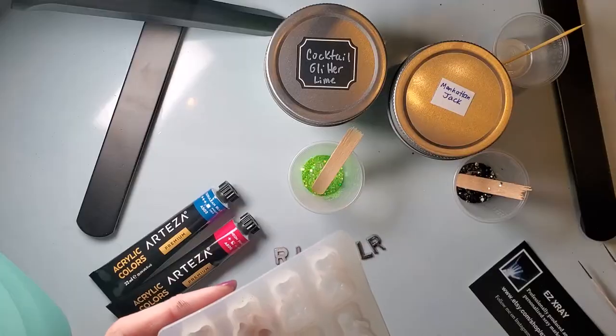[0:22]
I am going to be doing another tutorial on some little x-ray markers. They are out of a mold. I used UV resin and some acrylic paint. So I'm gonna come show y'all how I made these. They're super cute. So let me get everything adjusted and I will be right back.
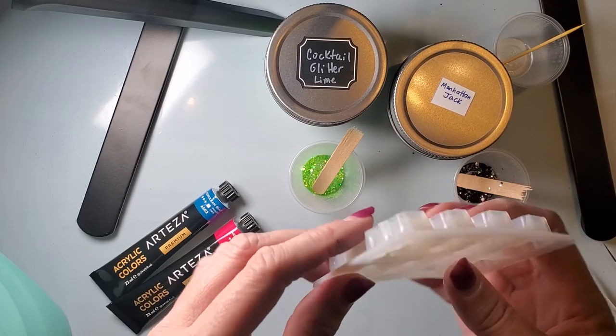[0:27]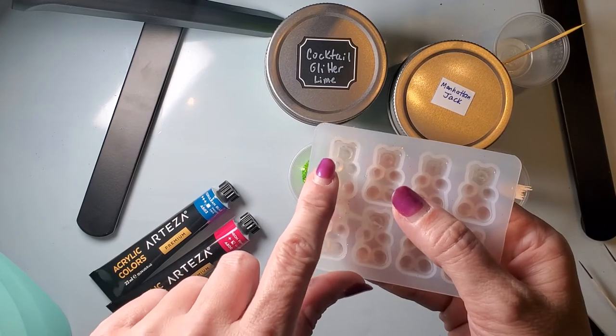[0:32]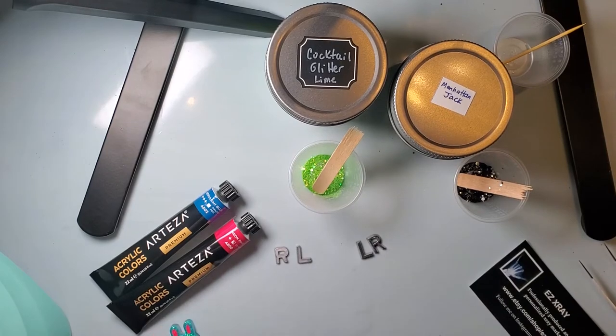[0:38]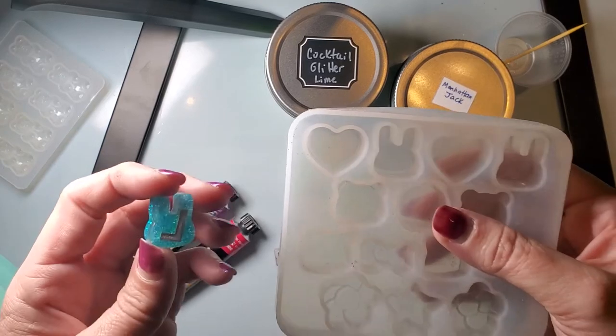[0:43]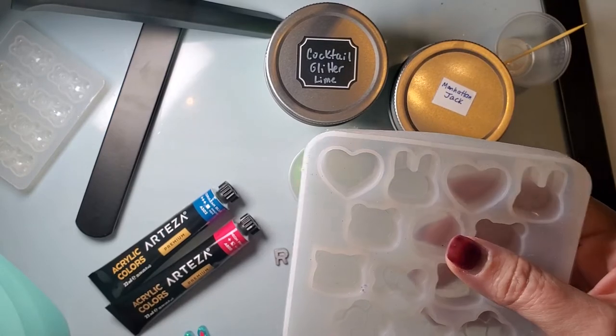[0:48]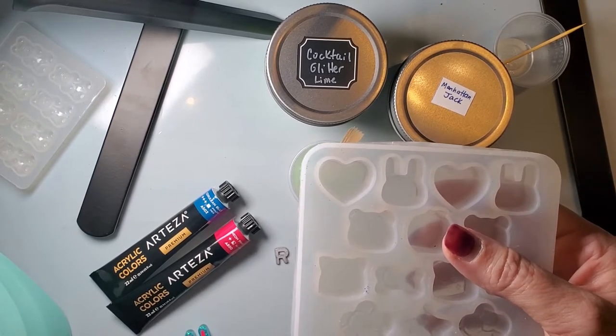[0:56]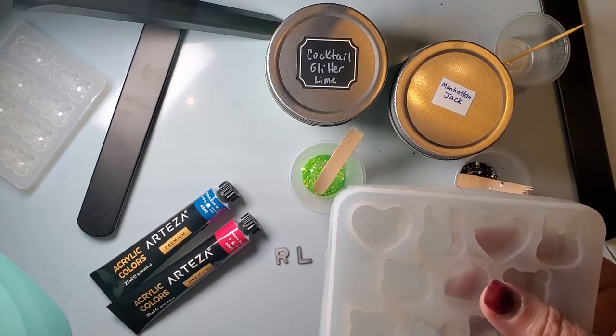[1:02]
So if you've seen my earlier video with the gummy bear molds, the details kind of come up high, so you have to fill the whole mold to get the whole design of the gummy bear. Whereas these are also really thick, but I don't fill it up all the way. So they're not as thick, but you can make it as thin or thick as you like, to your preference. But for x-ray markers, I don't want mine super thick because some people do want them to fit into the bucky. And if you do them really thick, they're definitely not going to fit into a bucky because all buckies are a little bit different.
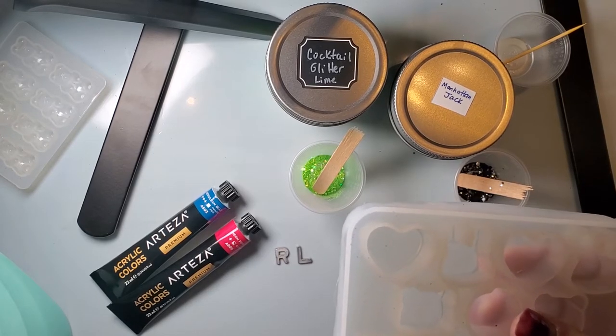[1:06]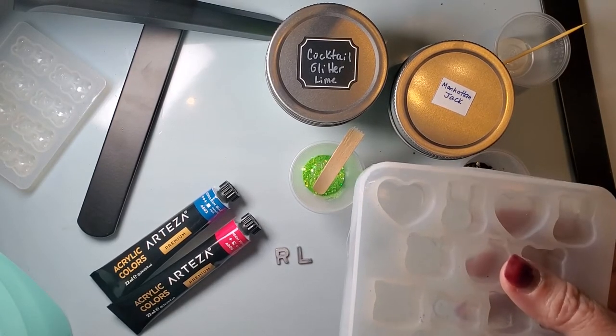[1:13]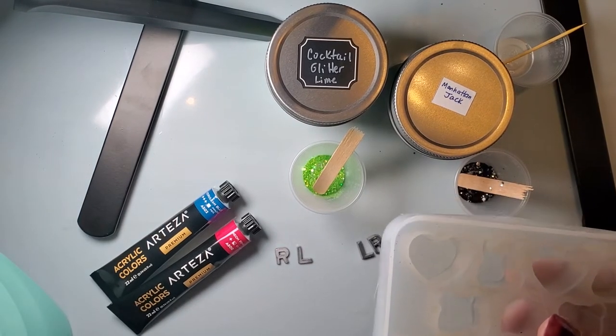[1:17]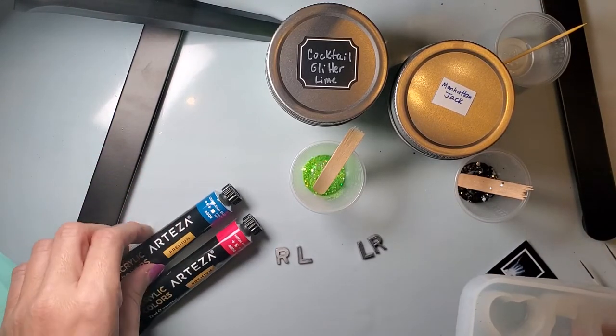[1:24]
And that's what you use to put the cassette in. It's a wall mounted grid or a grid on a table. It's the little tray that comes in and out of an x-ray table or on the wall bucky. And it just makes for a cleaner picture. So some people like to put their markers right on the cassette because it's not as much magnification. So that's kind of why some people like it.
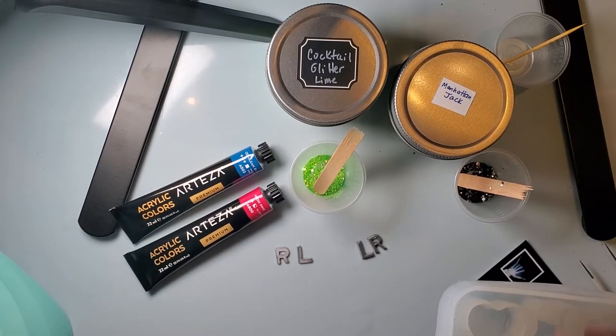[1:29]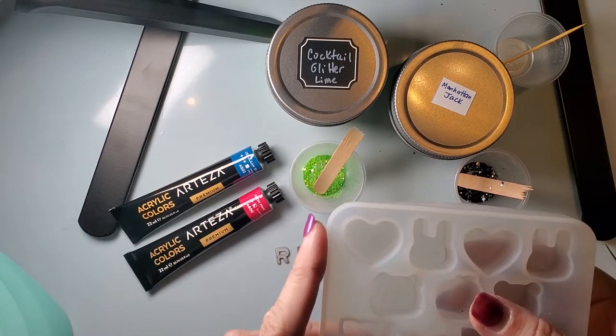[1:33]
I don't have a problem using mine tabletop or taping it to the front of the bucky, but some people might not like it. So I would suggest letting people know how thick they are.
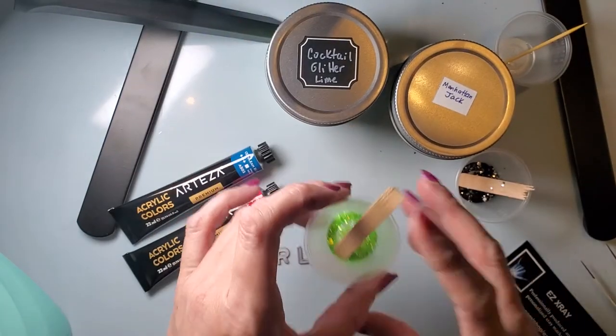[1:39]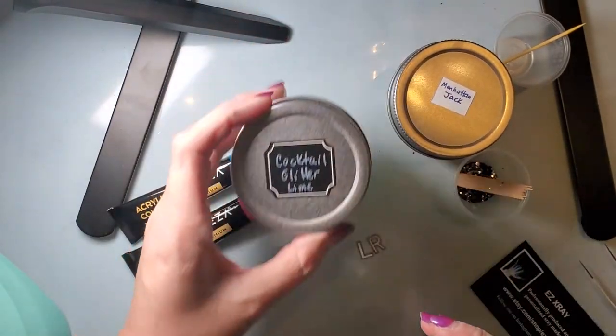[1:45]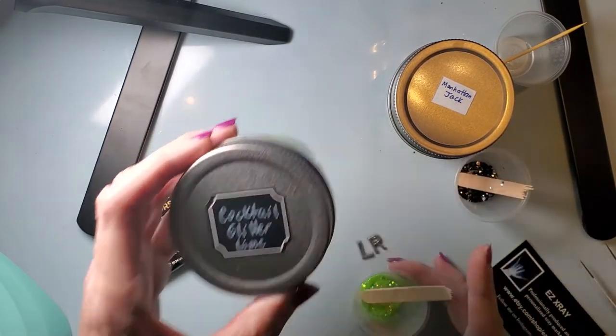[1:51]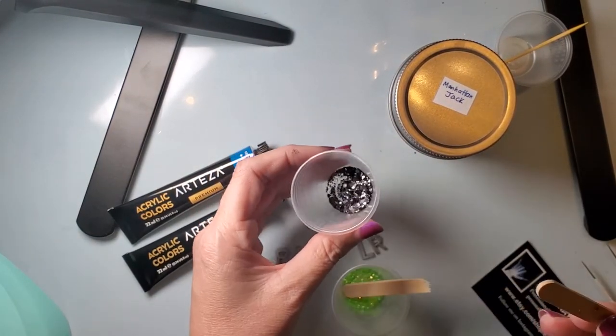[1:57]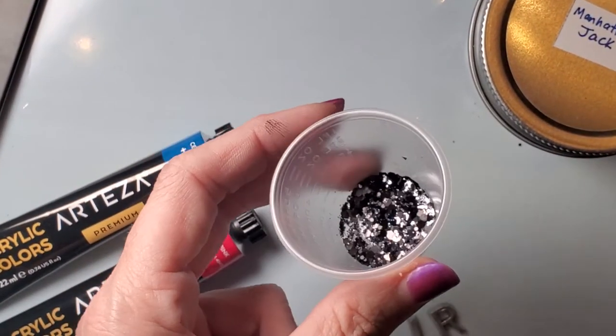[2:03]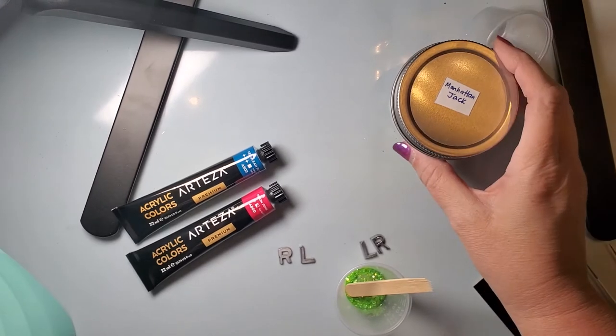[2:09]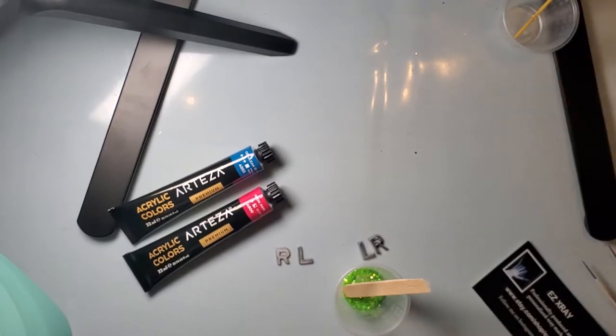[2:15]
But so my friend picked out a lime green glitter. It is cocktail glitter lime. This one is from Nola Craft Culture, which like I said, is one of my go-tos. And then the other one is a black and it's got like a foil in it. I don't know if you can really see that very well. Let's see if I can zoom in a little bit better. So it does have some foil in it. And let me zoom back out. That one is Manhattan Jack, and that one is from Mr. Nola's. So that's kind of my two go-to places when I get my glitter.
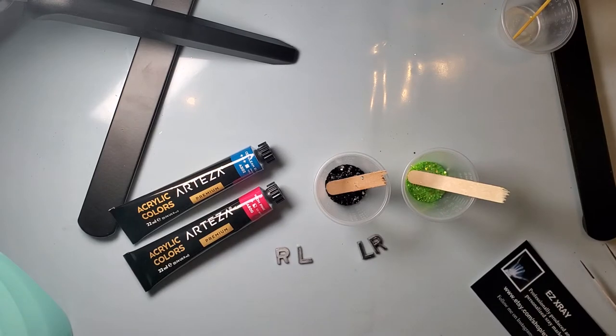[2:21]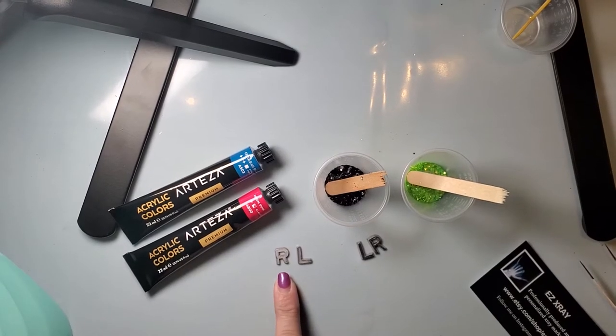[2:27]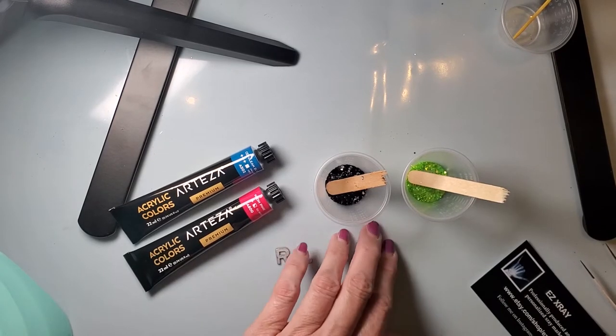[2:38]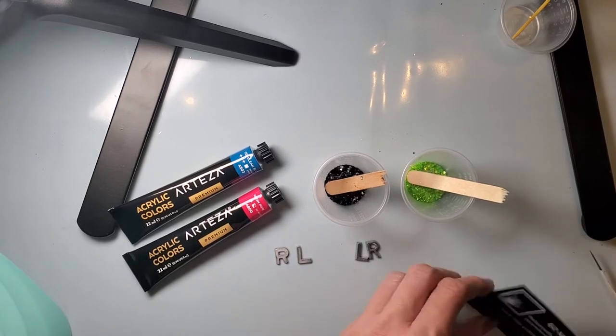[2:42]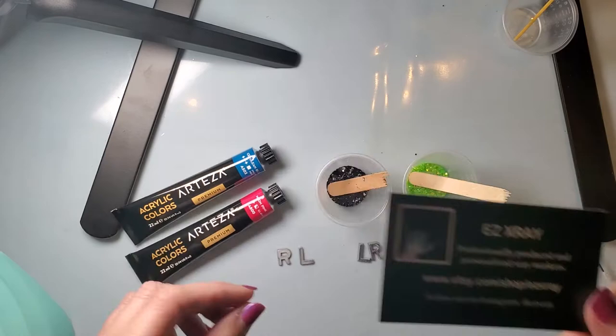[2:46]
So lead letters. I had always been using Universal Medical for my lead letters. I went the other day and I did see that their prices had gone up. So I did a little bit more of a search and I did find another company. It's actually Easy X-Ray. I'm gonna show you the card. Easy X-Ray, it's off of Etsy.
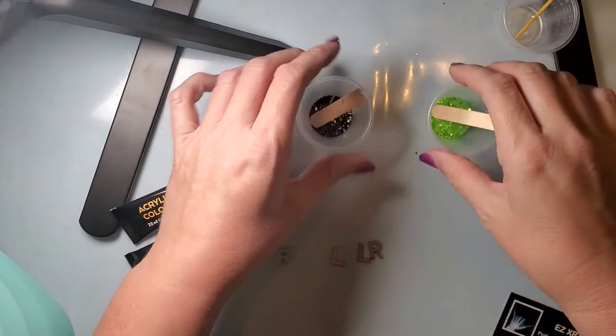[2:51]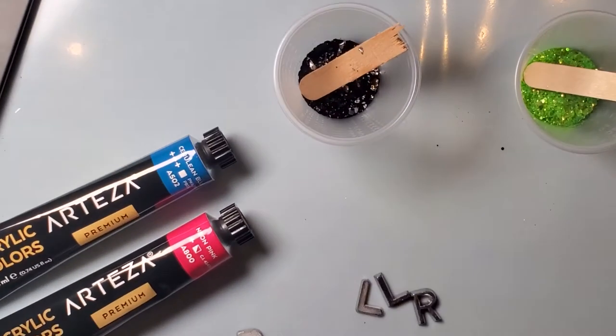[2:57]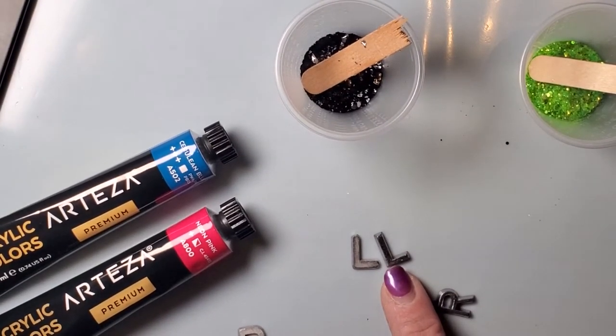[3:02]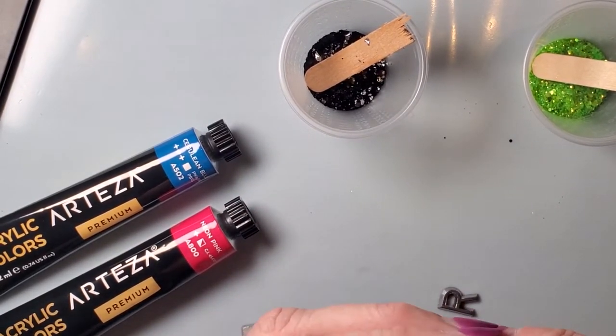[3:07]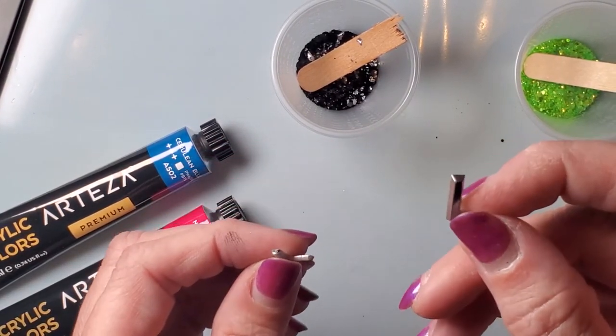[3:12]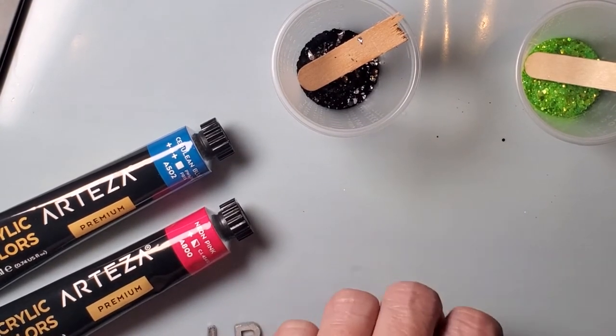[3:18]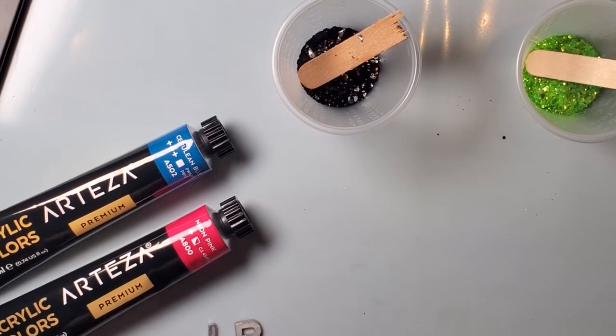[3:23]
The letters are just a tad bit different. Let's see if I can zoom back in, guys. Oops, wrong way, sorry. So the letters do look just a little bit different, and there's also a little bit of difference in the thickness of them. The ones from Easy X-Ray are a little bit thicker, but they're still going to work. I'm going to go ahead and use my ones from Universal Medical just because I'm going to use up what I have left. So I will go ahead and use these.
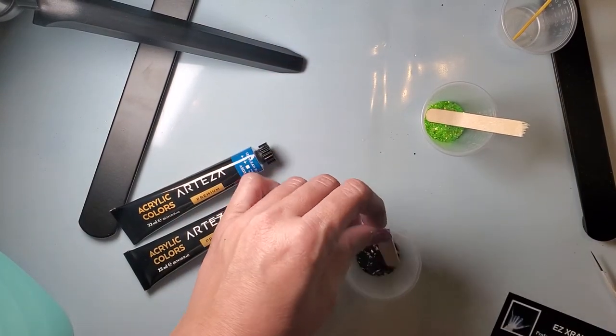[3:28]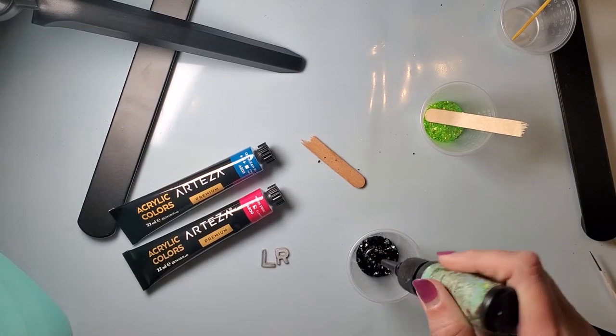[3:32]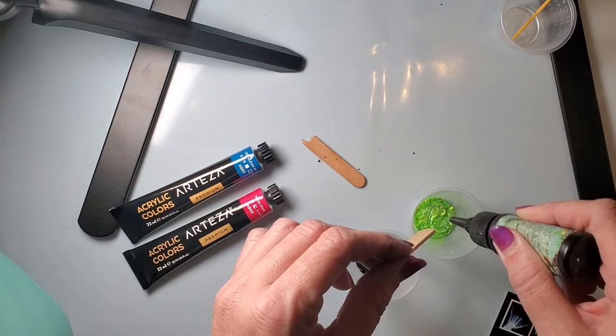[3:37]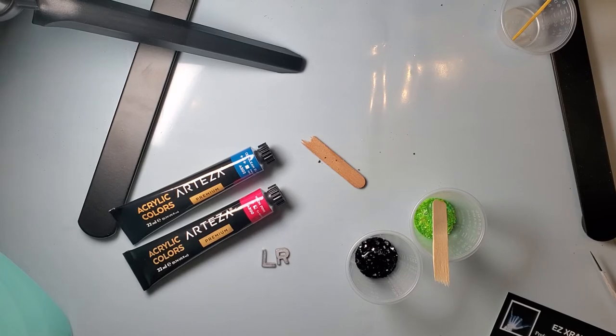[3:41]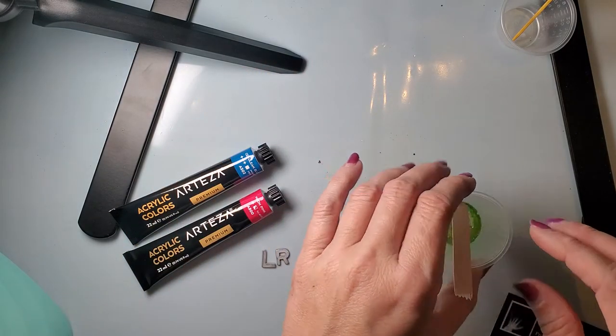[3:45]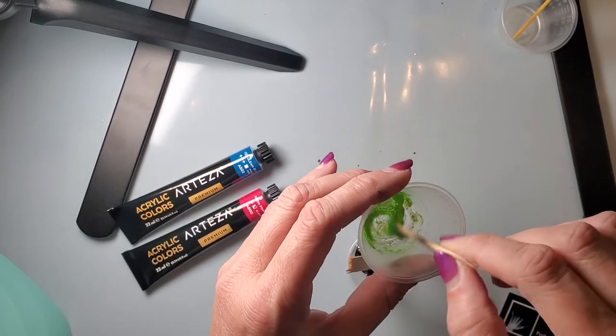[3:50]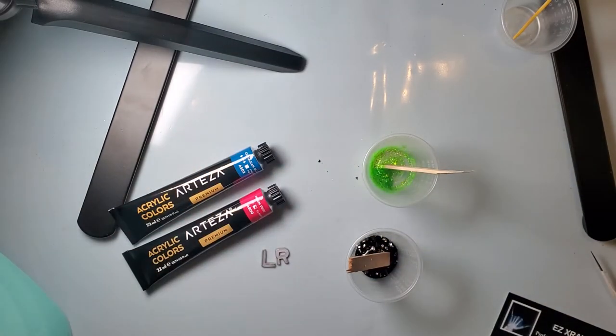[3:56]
So I will go ahead and add my resin to each little cup. Sorry guys, I still don't have a really great setup yet because I'm still waiting for them to do my floors in my craft room. So I'm gonna mix it up. I'm gonna add a little bit more to this one. This one's not quite as thin as I like it. Give me just a sec, let me readjust something here.
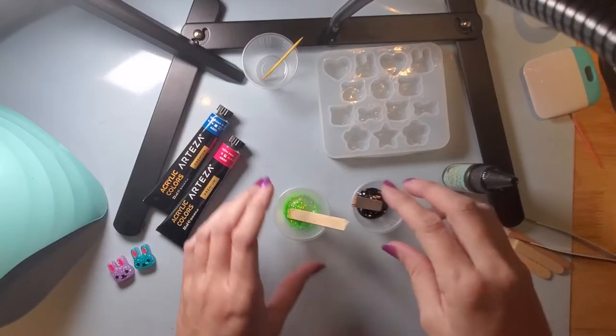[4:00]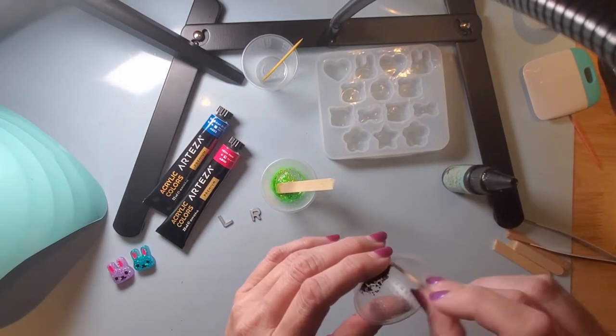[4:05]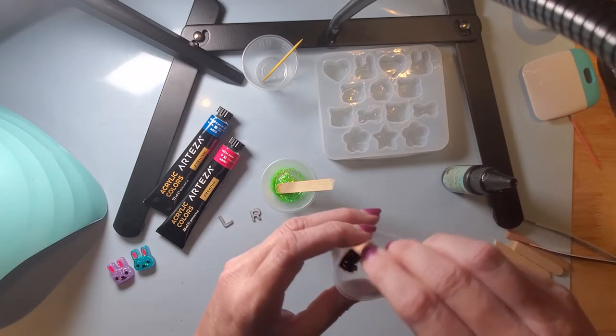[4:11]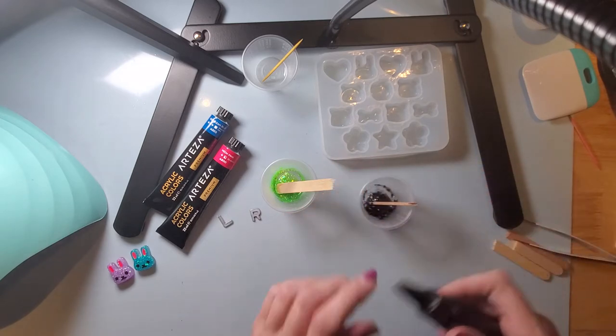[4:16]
All right, so like I was saying, I'm gonna mix them up and make sure they're the consistency that I want. Because the green, I know that I have to add a little bit more UV resin to it. My black just a little bit more also.
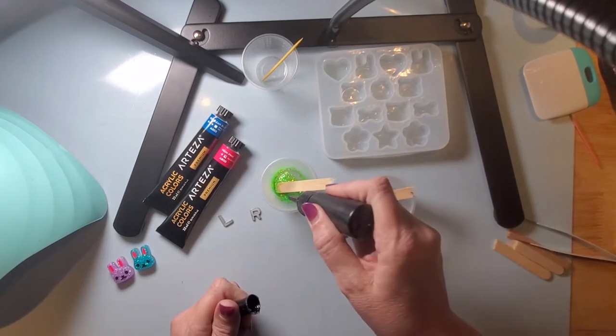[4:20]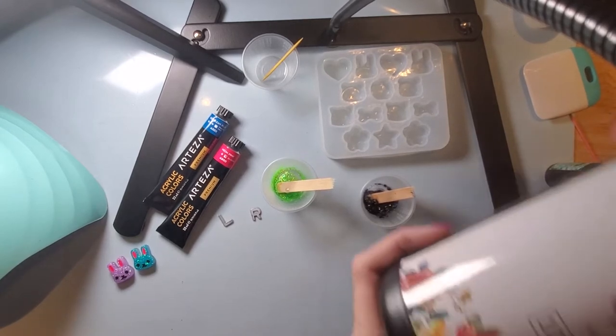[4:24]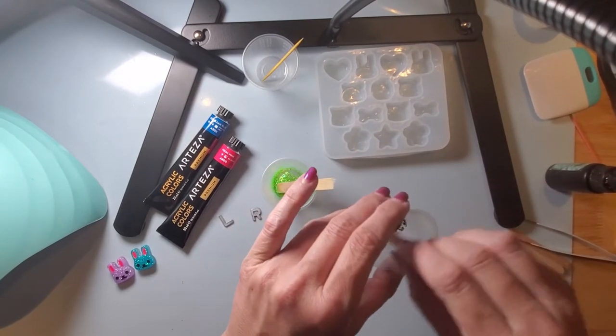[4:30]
I get my resin, it's a Lumino brand. I do get mine off of Amazon, and I get the 1000 gram. I like it, I haven't had any problems with it. But to each their own.
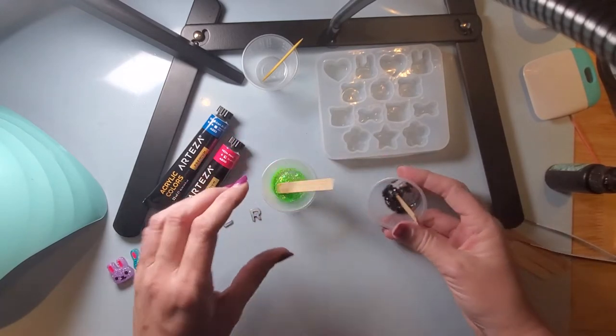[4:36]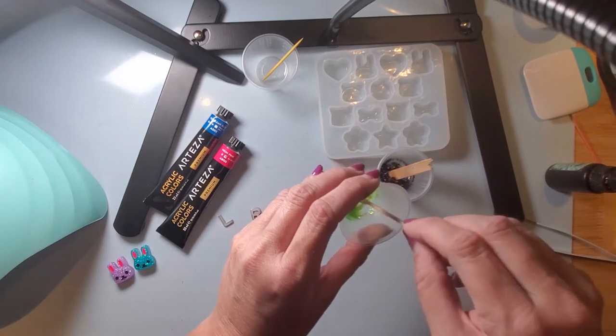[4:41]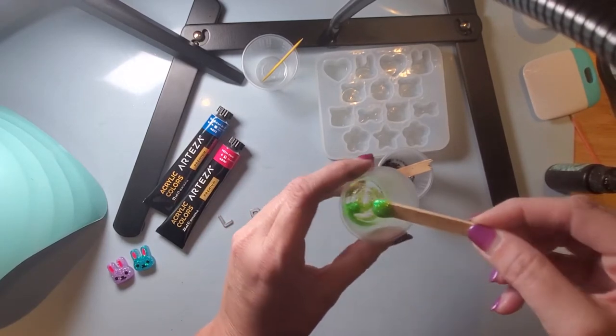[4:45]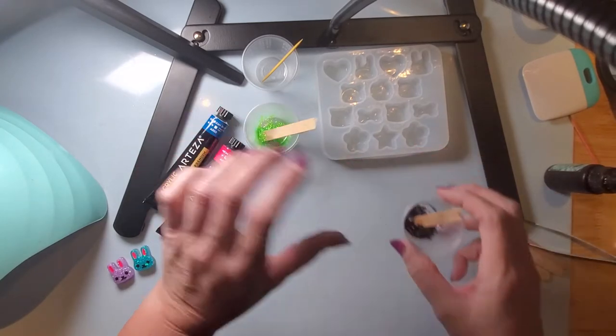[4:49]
All right, so I don't like my glitter and resin mix super thick. I like it to run just a little bit to where it kind of drips off. So, all right, I am going to do the bunny.
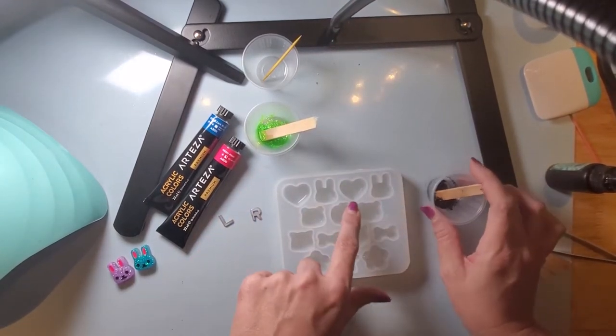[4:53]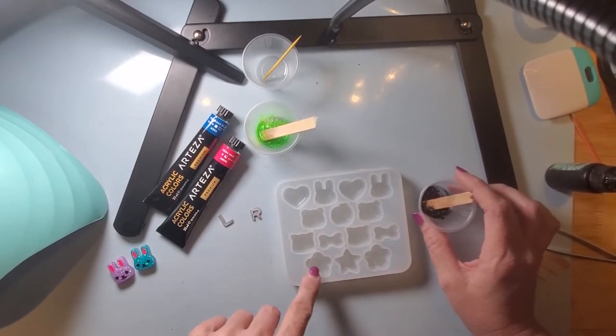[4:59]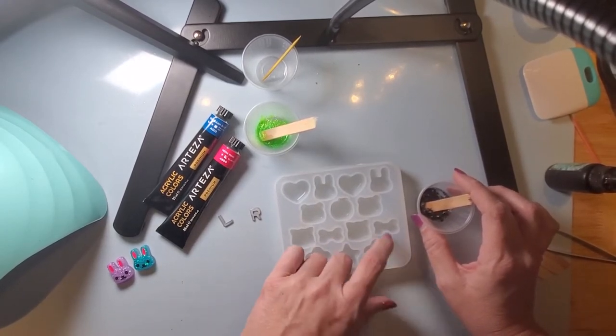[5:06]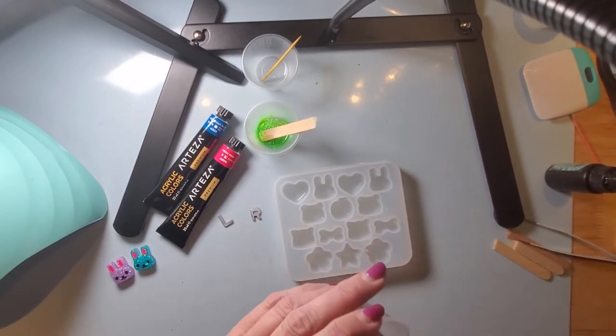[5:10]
So there's bunnies, hearts, little kitty cats. I think that's kitty cats. I don't know if it's supposed to be cats or little bears. Actually, that's the bear. This is the kitty cat. Flower, stars, bows. The bows you can't fit a right into, but if you so desired, you could do a left. So I'm gonna do black and lime.
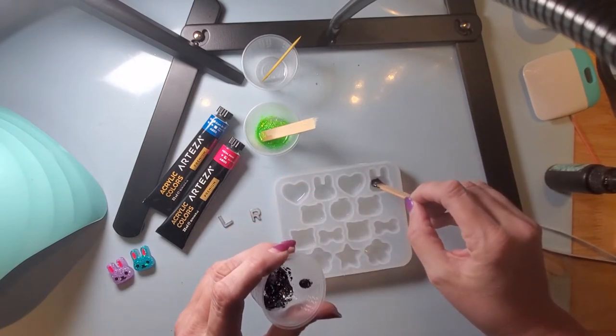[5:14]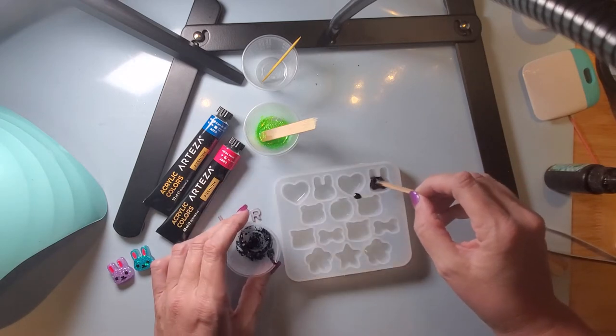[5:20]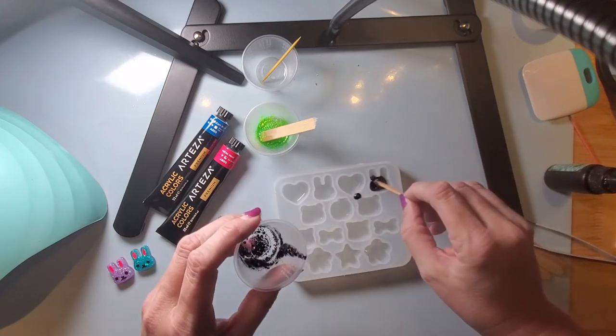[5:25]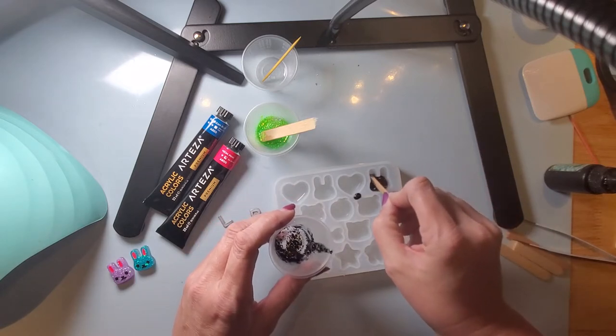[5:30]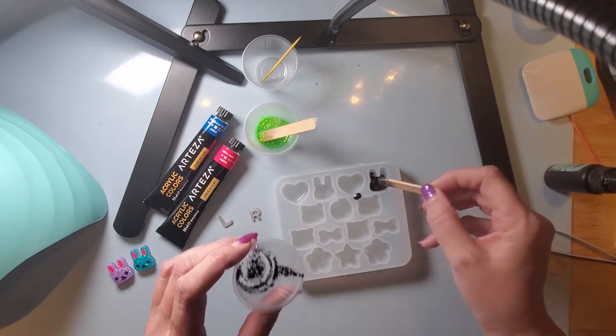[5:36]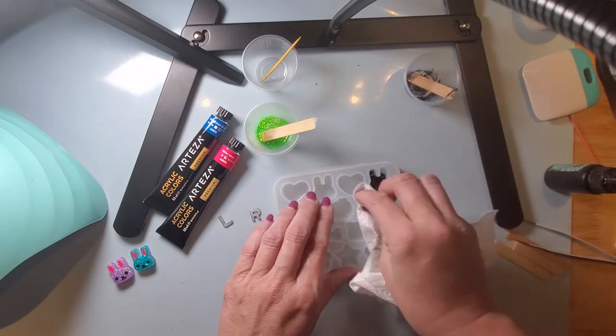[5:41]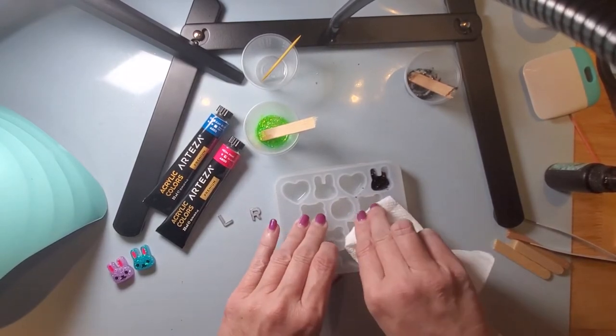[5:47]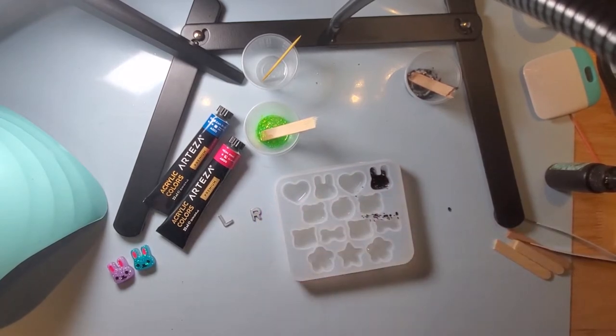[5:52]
So with this particular mold, I'm gonna kind of mostly fill it at the bottom as I make a mess. I'll clean that up in a second. And then I'm gonna push it up into the ears, because when I was doing it earlier on the first set I did, it really kind of stuck more to the sides of it. So I will go ahead and clean this up real quick. I'm just making more of a mess, aren't I? That's all right. I can peel it off once it's cured.
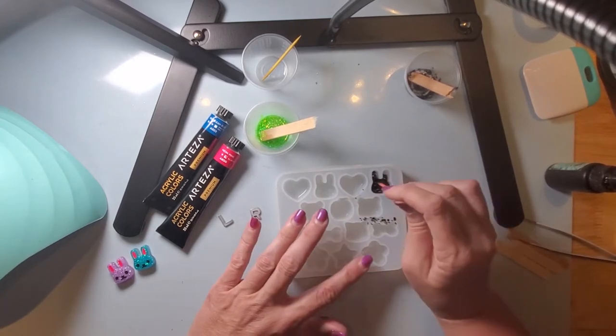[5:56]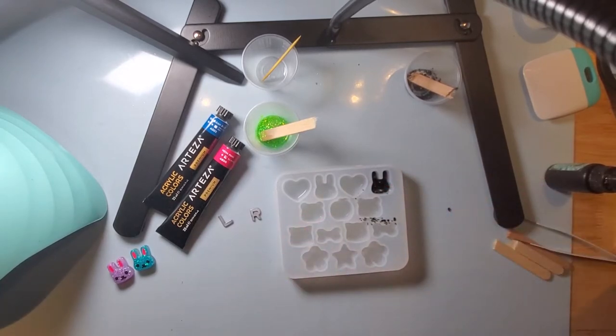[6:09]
All right. So I will just grab a toothpick, and then I kind of just run it around, pushing it here and there, trying to make sure it fills all the cracks. So that's that. So now I'm going to do the green one.
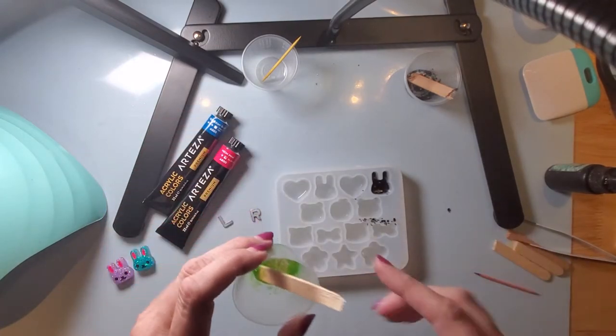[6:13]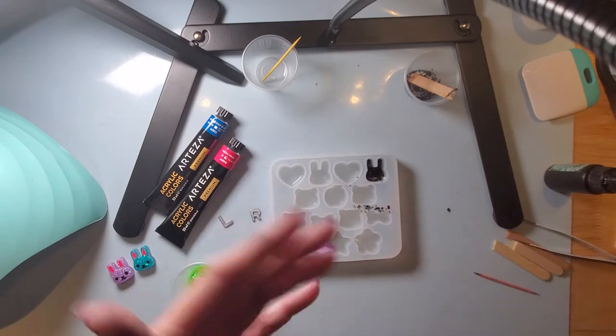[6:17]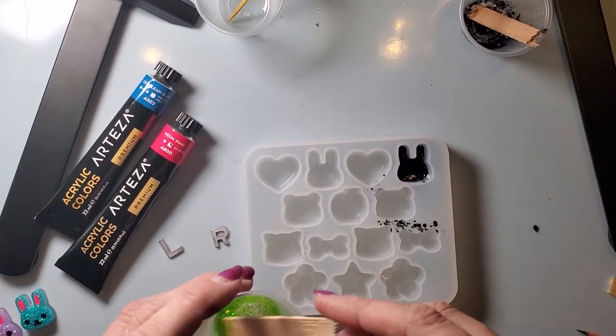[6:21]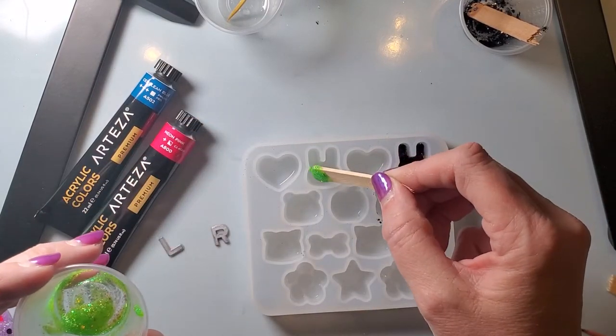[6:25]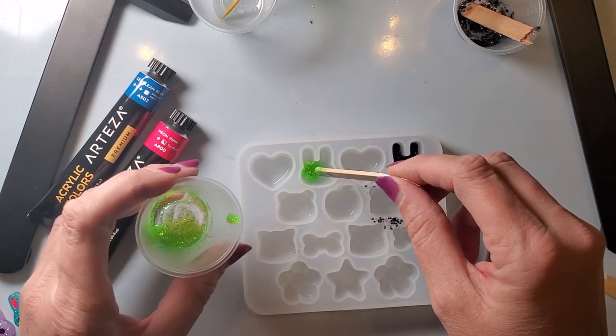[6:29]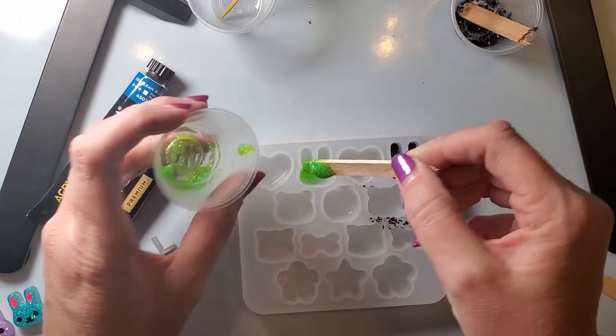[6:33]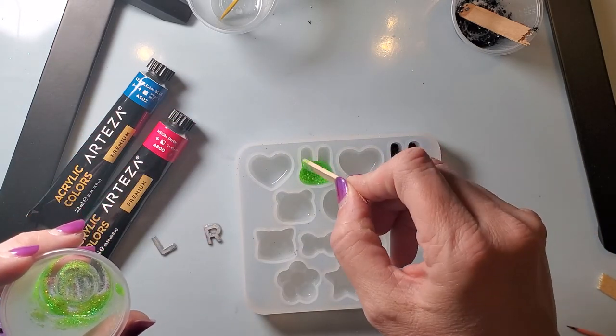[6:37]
Now, if you wanted, you could go ahead and do the whole thing in the same color. I prefer to be able to see the right and the left, just in case you forget which one's which. That way the x-ray tech can make sure that they put the correct marker on for the anatomical positioning. Because you really don't want to put up the wrong marker and then have to go and fix it after.
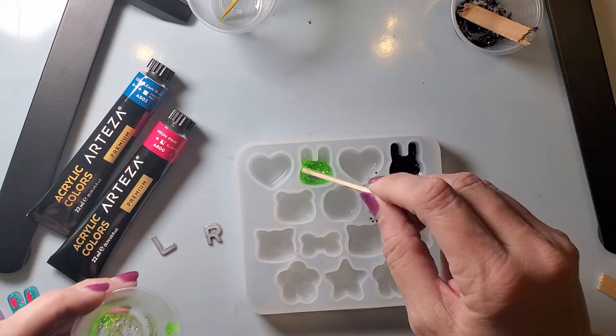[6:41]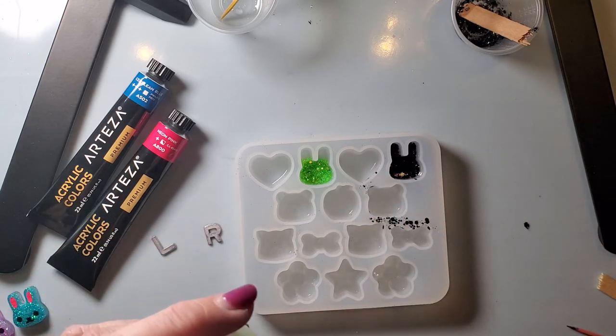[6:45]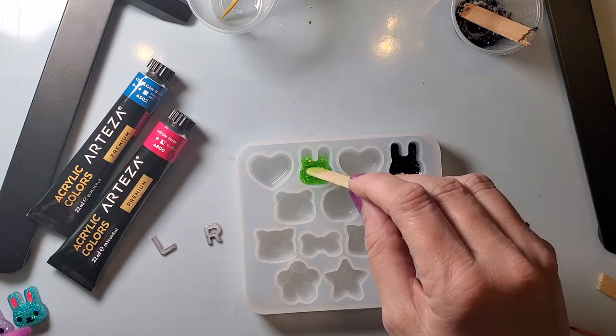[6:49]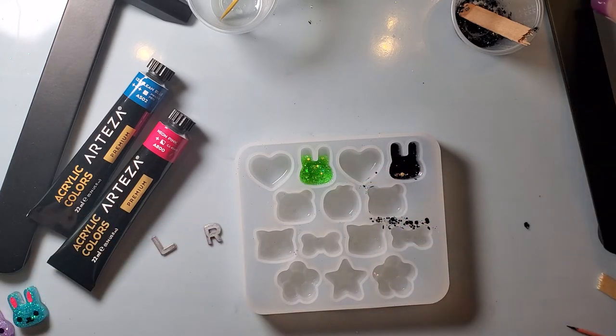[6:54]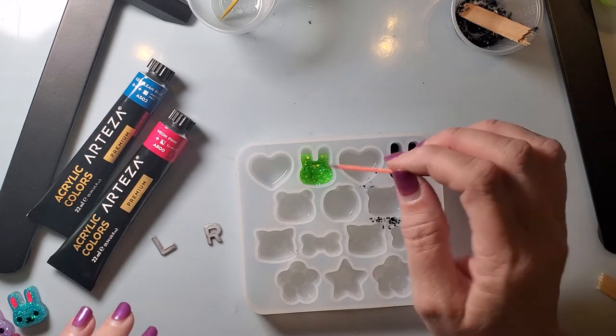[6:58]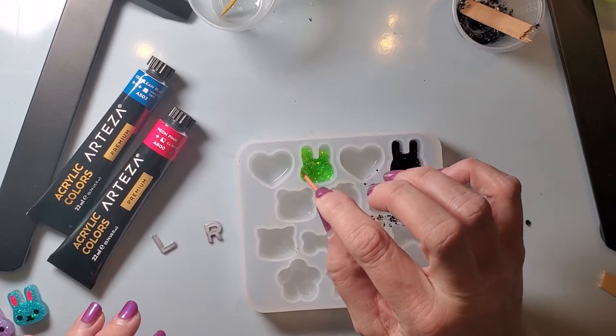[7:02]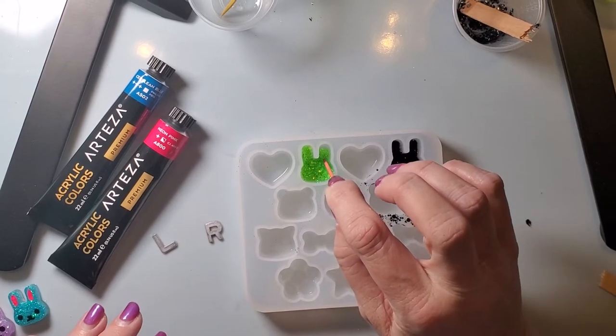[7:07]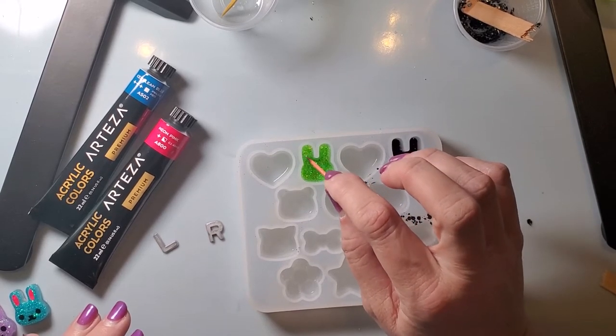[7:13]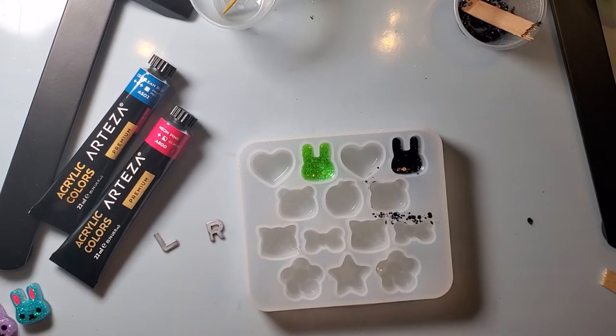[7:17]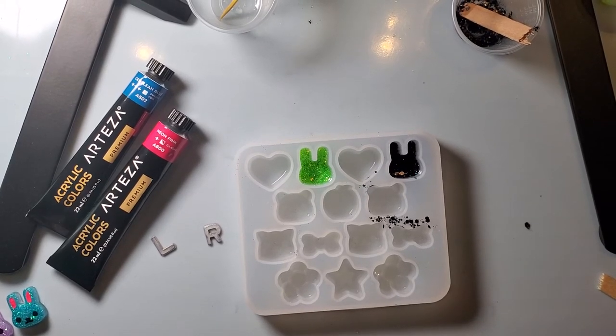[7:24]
So I know different people have commented on other sites that I've been on that do x-ray markers. Now every state's going to be a little bit different with rules and regulations. My state and my facility, we do not have to have our initials. Now they would prefer it, but overall my hospital really doesn't care, because the way that we digitally complete x-rays now, they know who did the x-ray, because you have to put your name on it when you complete the studies. Whereas before, you kind of didn't know who completed the x-rays without having initials, so since before computer systems.
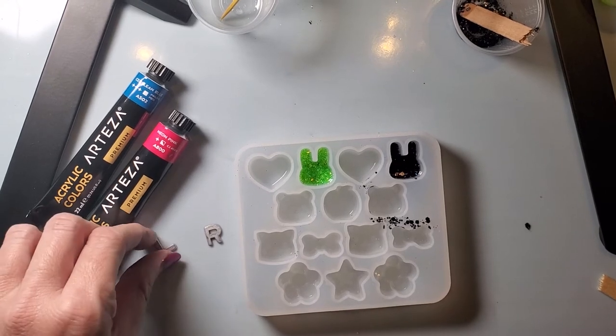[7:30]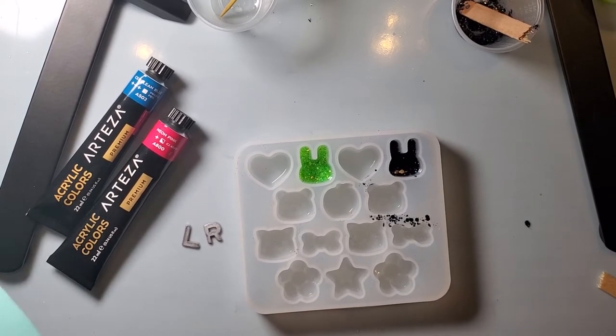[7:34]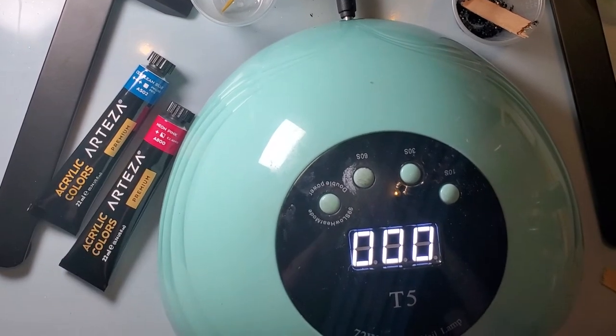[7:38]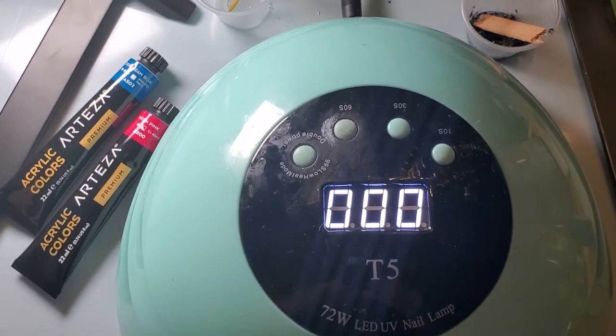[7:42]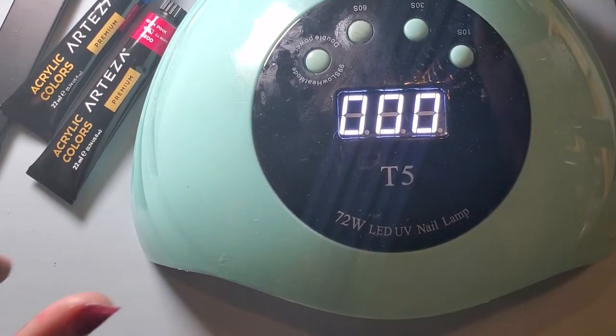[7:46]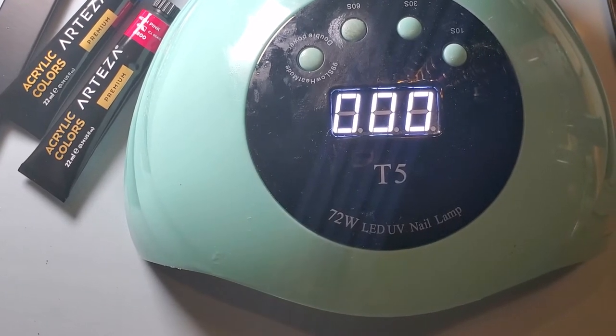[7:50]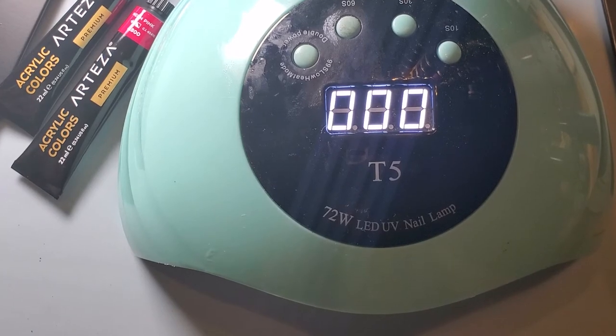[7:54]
Okay, so I'm going to go ahead and cure this. Everybody's lamps are going to be a little bit different. My particular lamp, let me adjust you a little, is a 72 watt lamp. So depending on your particular lamp will depend on how long it takes. Now my lamp probably takes about 3 to 5 minutes.
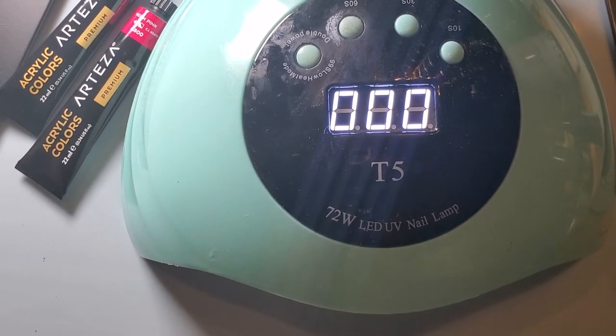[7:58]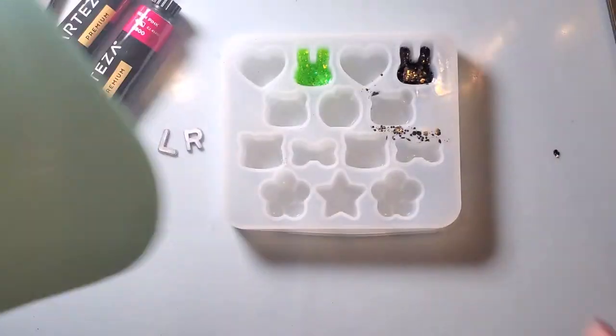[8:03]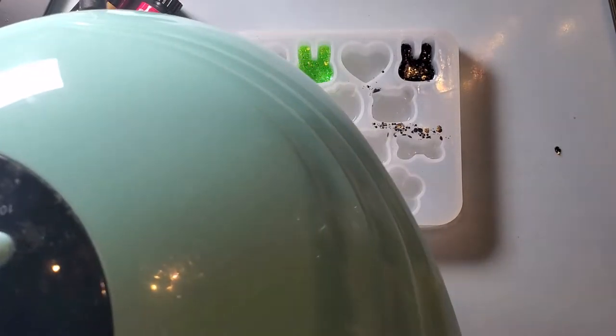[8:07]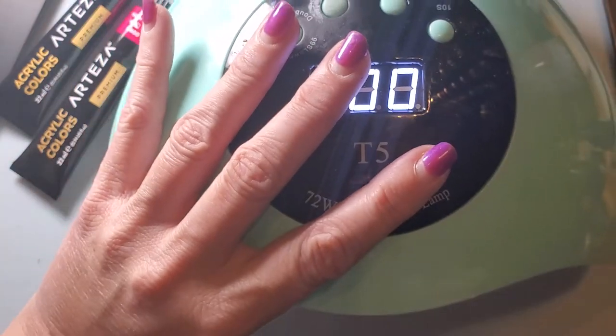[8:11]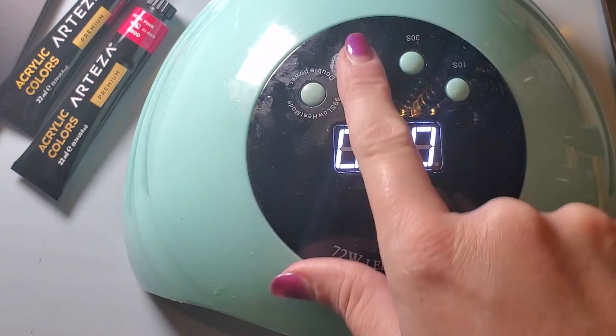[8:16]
It kind of depends. If you have any problems with it, you are more than welcome to go put them out in the sun. So I'm going to hit them like this. And then once I'm done everything and pop them out, I will hit them from the other side. I might even hit them before I pop them out to try to cure both sides. So I'm going to go ahead and cure mine, and then I will be right back once they're done curing to finish the clear part with the letters to show you all that. So I'll be back.
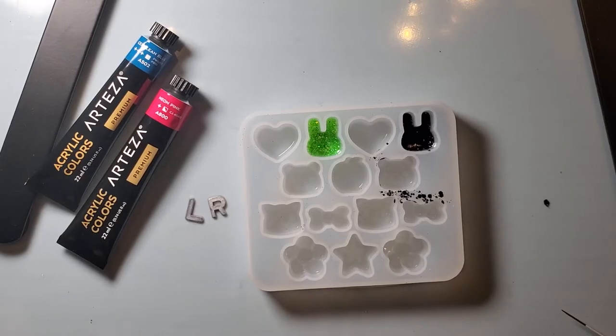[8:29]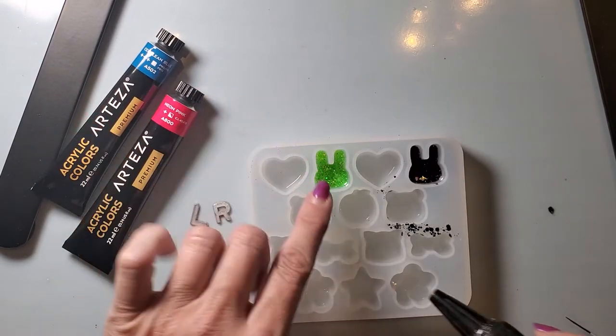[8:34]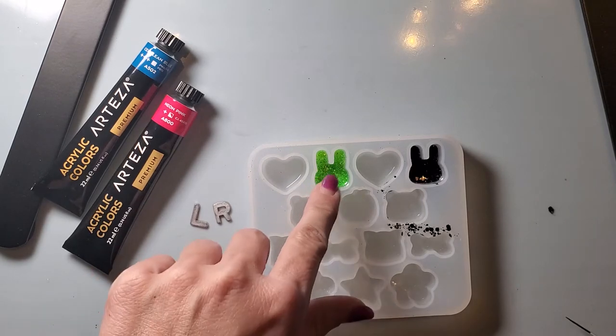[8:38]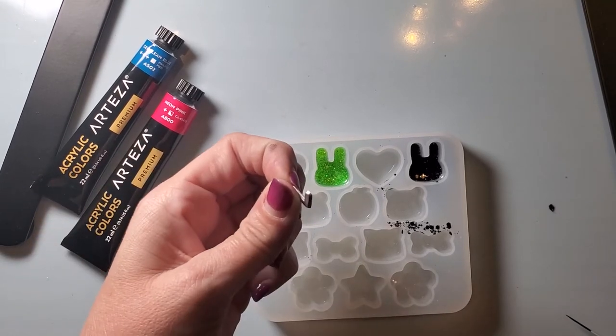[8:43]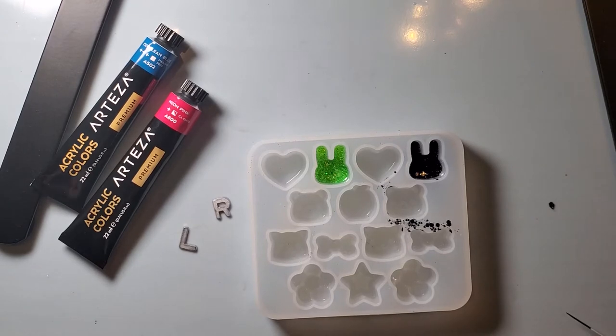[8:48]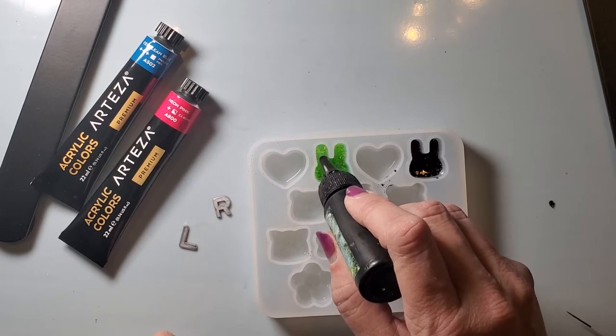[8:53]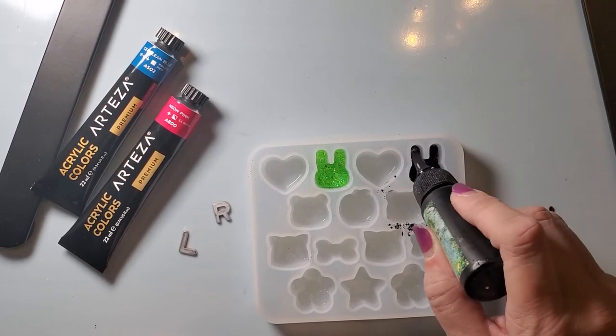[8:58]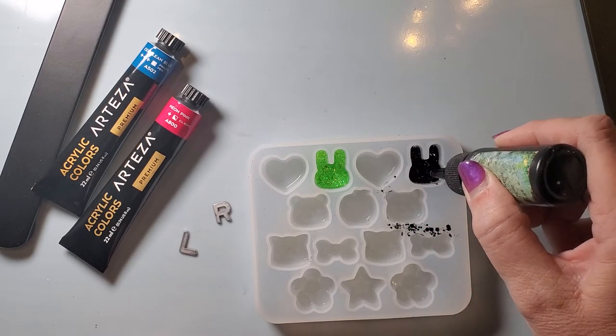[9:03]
All right, so now I am going to put some clear resin in this, and then I'm going to drop my letters. So for your clear resin part, it'll kind of depend on how thick your x-ray markers are, because you want to cover the whole back of it. That way, nothing's exposed where you don't have to worry about it popping off or anything. So I'm just going to fill the ears. And fill the body.
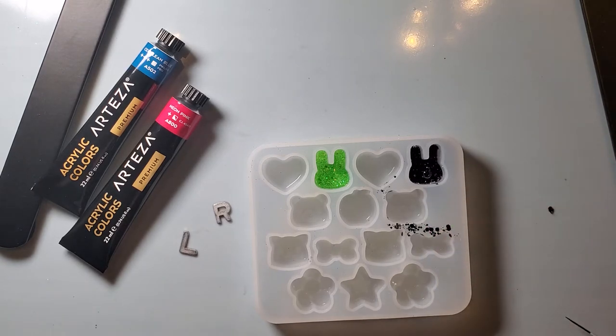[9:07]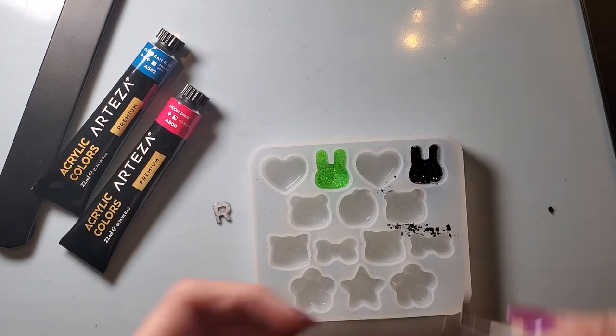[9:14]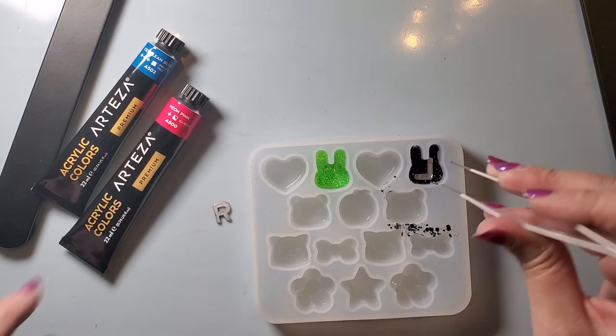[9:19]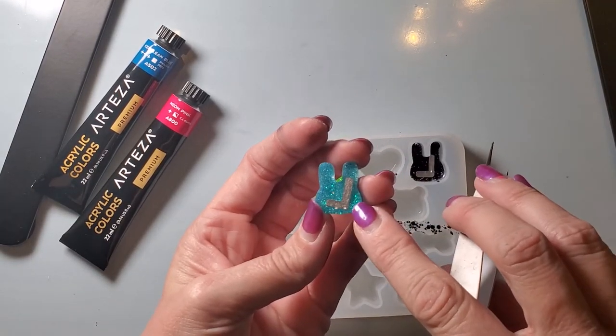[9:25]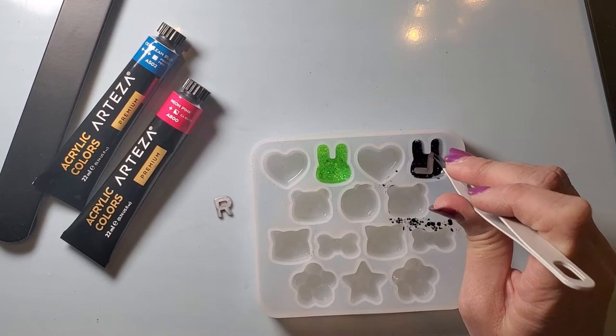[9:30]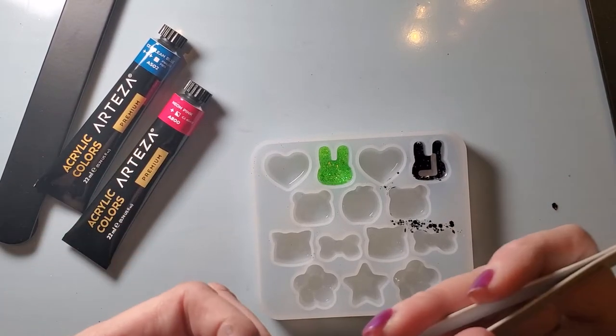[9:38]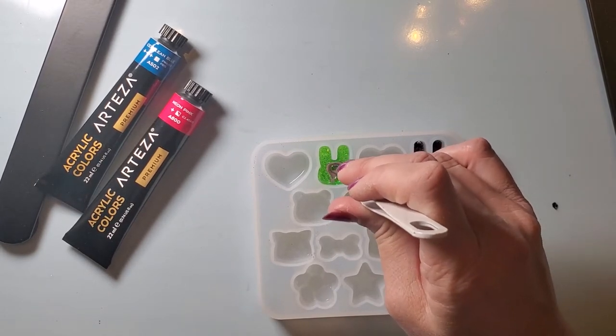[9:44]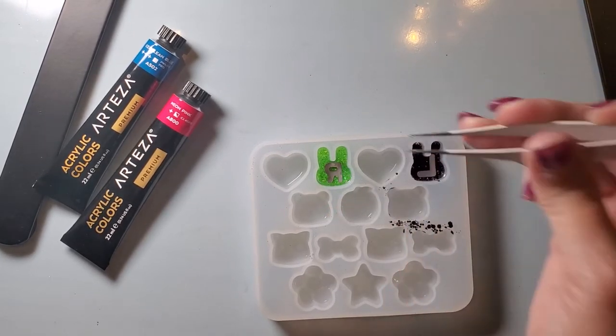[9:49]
So my friend didn't tell me which one she wanted left and right, so I am going to drop this one here. And be careful, because the first set that I did, let's see if I can find it. My left one, my L's a little off, because I picked up my mold and moved it. And I guess I really shouldn't have done that, because it shifted just enough in the mold that it's not straight, and it really bothers me. But that one wasn't an order for anybody. That was just a trial run for me playing with this particular mold, because I had not done the bunnies until I did the test run.
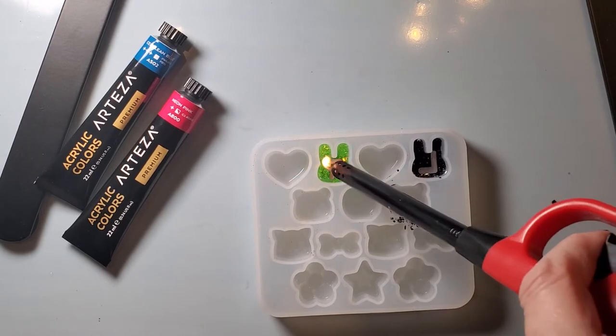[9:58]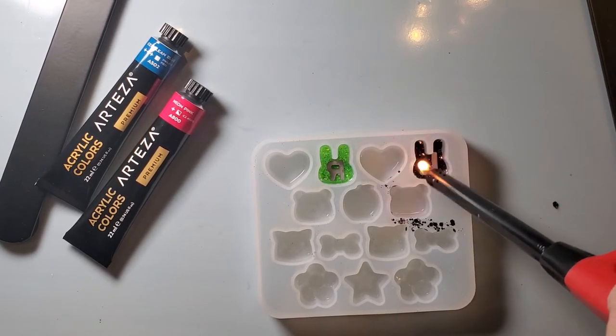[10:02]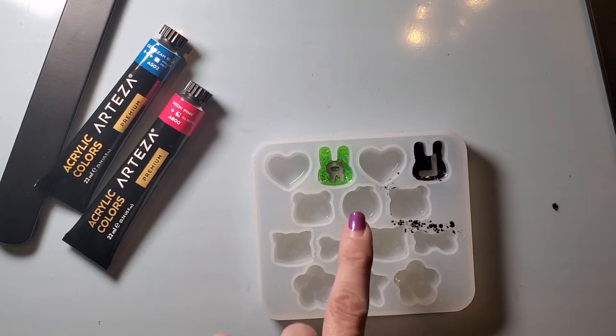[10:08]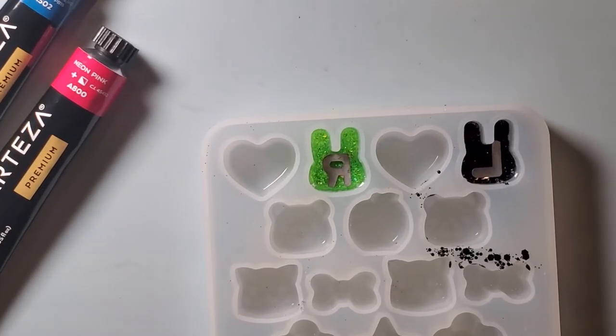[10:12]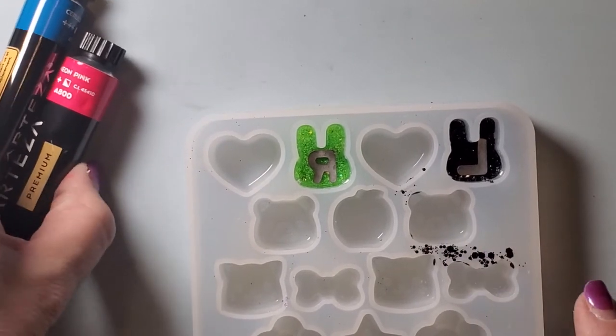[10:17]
All right. So some people are of a different mindset with taking a lighter to it. I mean, my lighters don't get very hot, and I would prefer to pop bubbles if I can. So I'll pop as many as I can. So both of my letters are covered. So I am going to leave this sit right here. Oh, look, I actually got some bubbles.
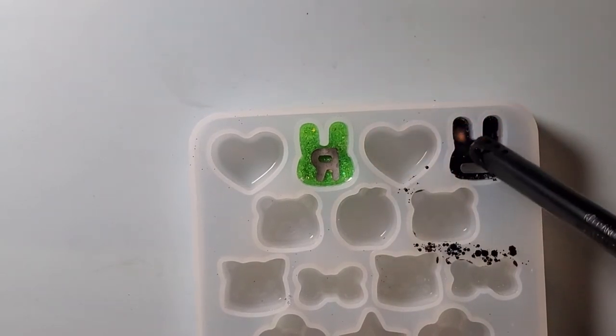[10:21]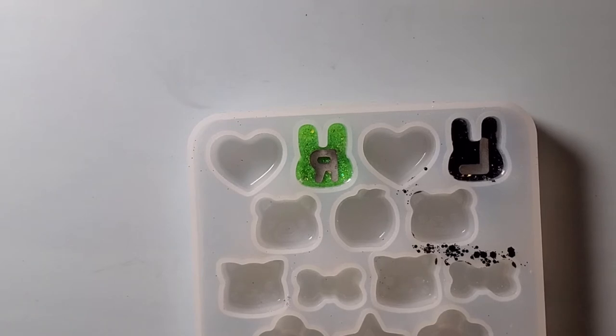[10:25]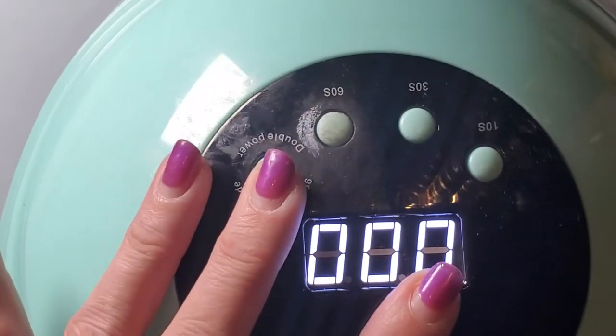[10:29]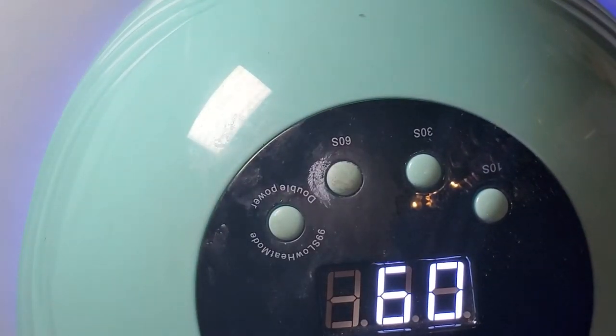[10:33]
So I am going to leave this sit right here, and I'm just going to move my lamp on top of it. That way, I don't have to worry about the letters shifting. And then I'm going to cure that again.
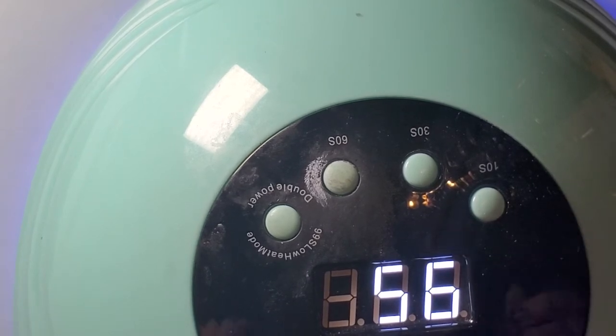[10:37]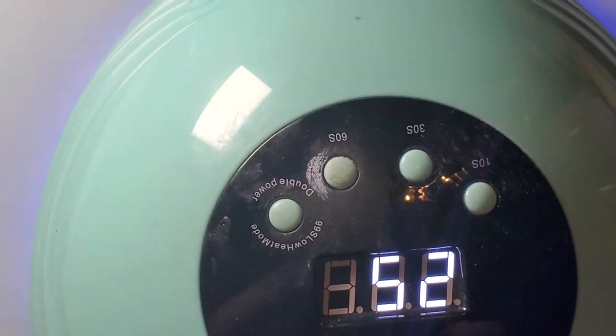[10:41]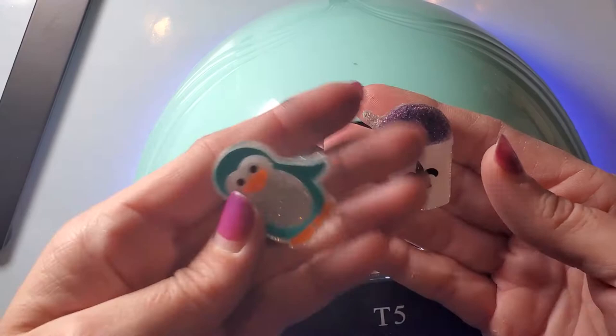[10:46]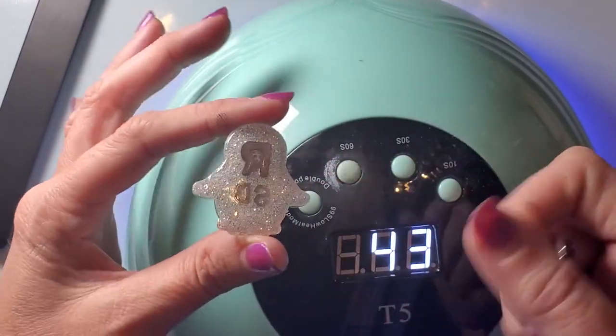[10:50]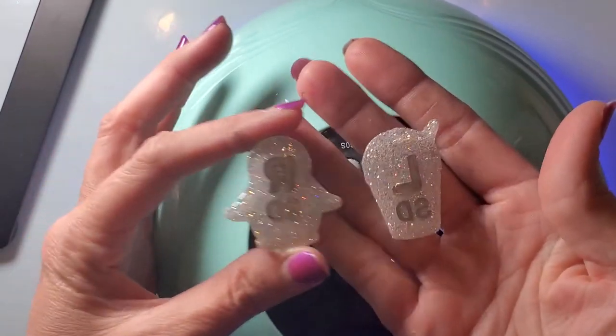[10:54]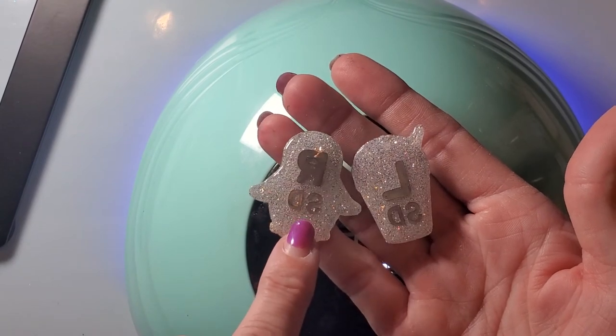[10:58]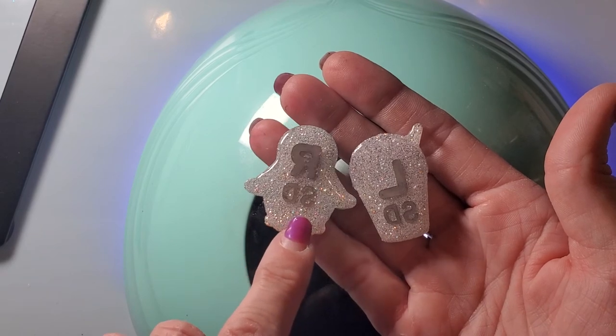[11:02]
So for those of you that don't know a whole lot about X-ray markers, or maybe haven't looked at my other videos or even seen X-ray markers before, these are some that I made for me. When I was telling you about initials, lots of times they'll have the right and the left, and they'll have the X-ray tech's initials. So mine are SD or SED. It kind of depends. If somebody's already got SD, they might do an SED.
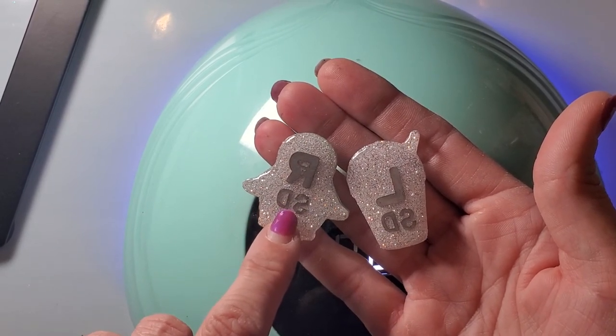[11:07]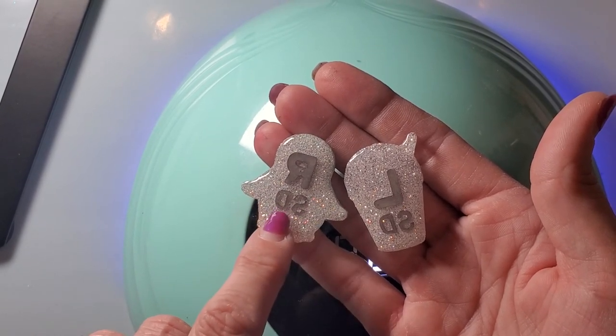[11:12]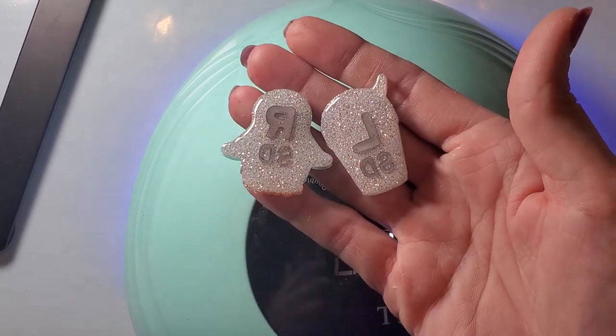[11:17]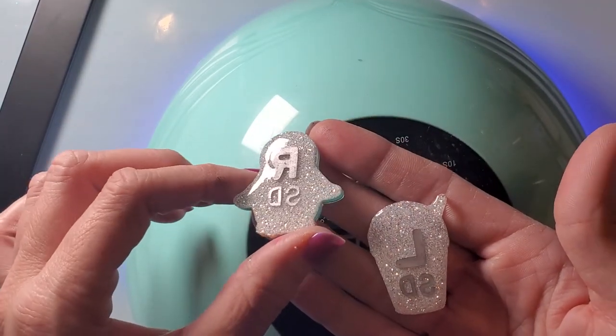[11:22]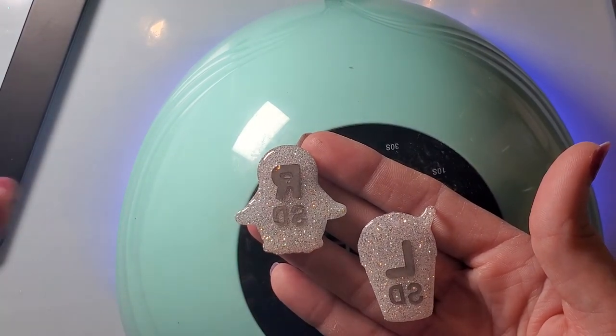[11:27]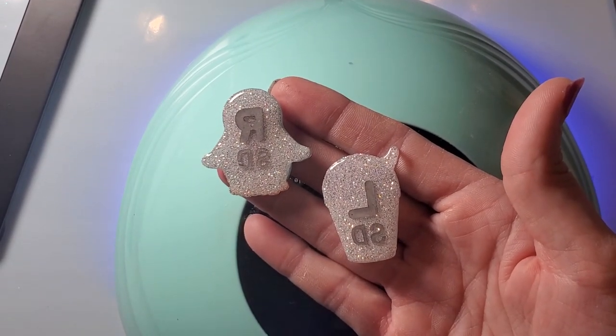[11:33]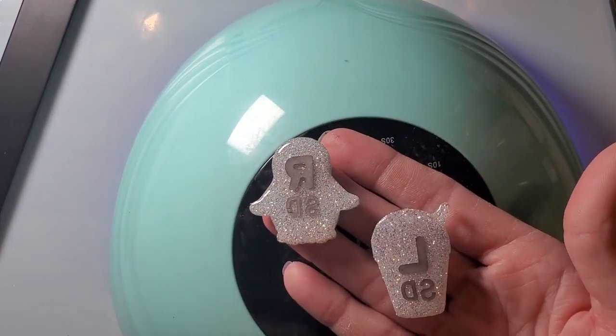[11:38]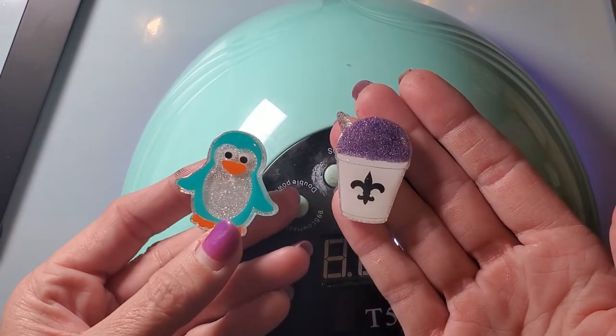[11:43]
They'll throw in your middle name, or they might throw in a one or a two in the back of it. It all depends on the facility. They'll make them a little bit different to where if you have people with multiple same initials, they can tell the difference. But like I said, most places out here, it's not mandatory to have your initials. So I actually sell more with just right and left, but it's up to the customer. That's their choice what they're buying, and it's going to depend on their particular facility, how they do it there. So it's preference, but these are mine that I made for myself.
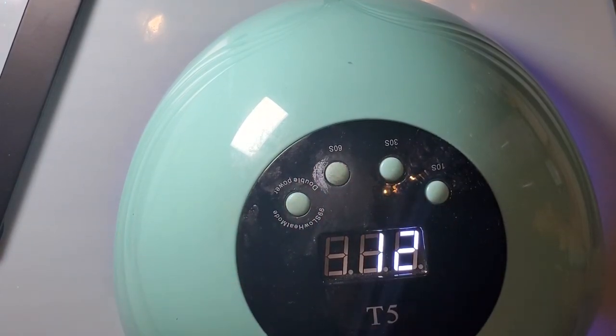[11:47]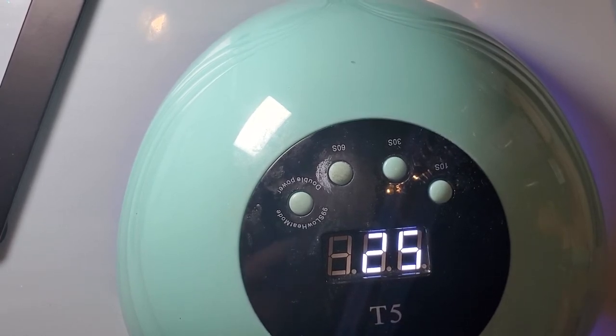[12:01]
I still have my original ones from when I started X-ray school. I think I lost one of them. But I did have another set too from when I graduated X-ray school. But yes, I am an X-ray tech if anybody's wondering. So I will come back when I am done curing these.
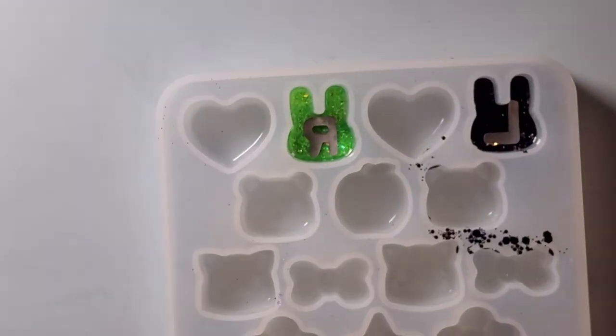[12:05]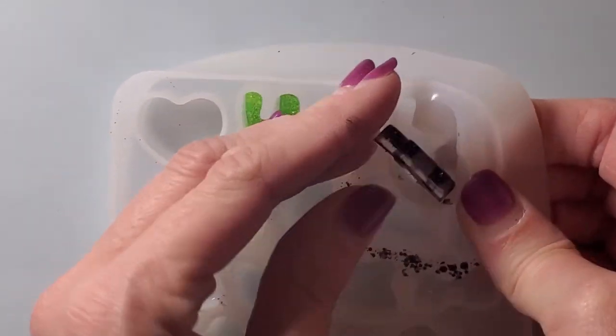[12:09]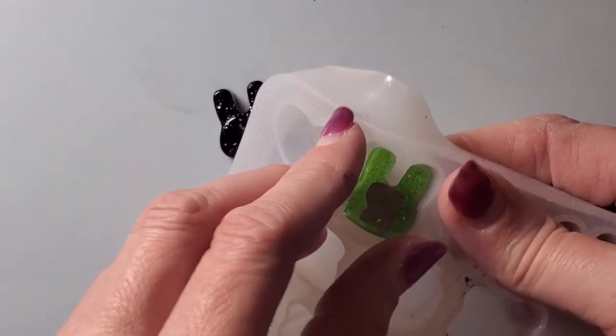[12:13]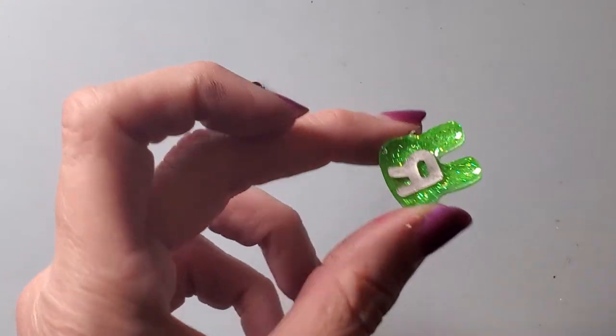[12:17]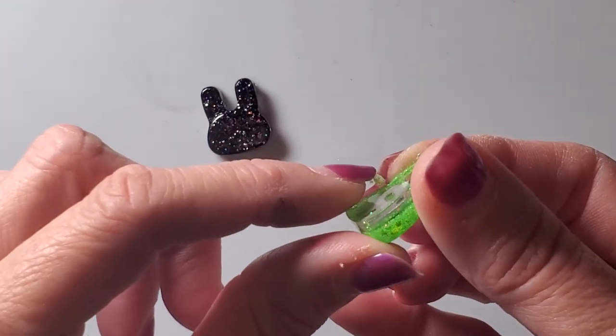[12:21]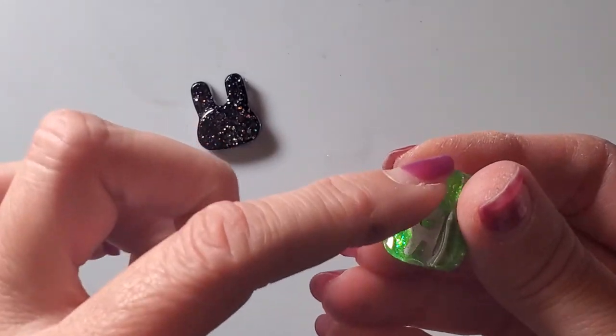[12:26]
All right, so these are cured. So I am going to come and pop them out. And I just give them a little push. So that's one. Then that's two. So if you look at the mold, I don't know if you can see, it's got some little edges on it, and there's also an edge all the way around. So you have a couple different options with this.
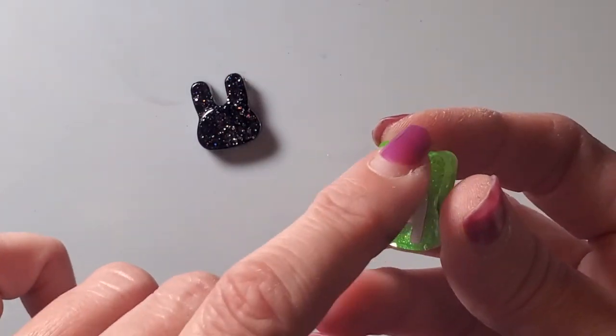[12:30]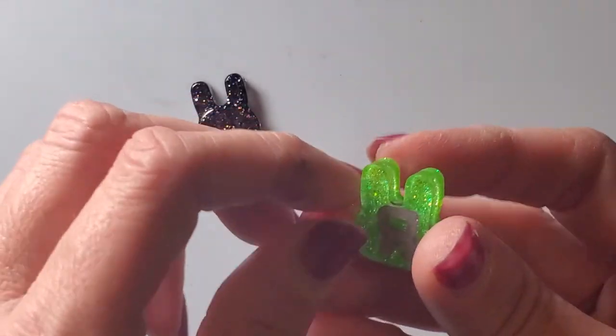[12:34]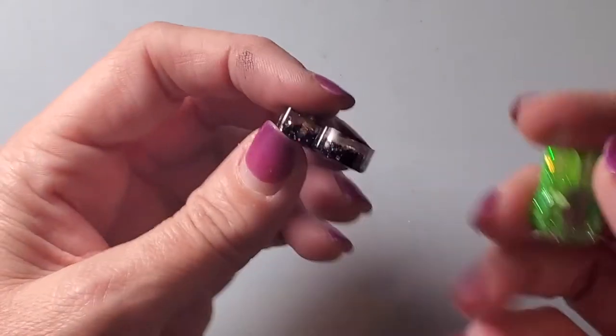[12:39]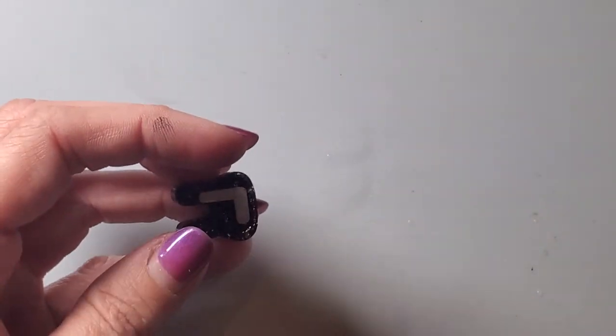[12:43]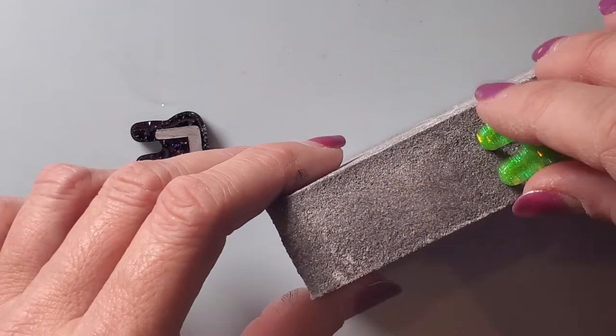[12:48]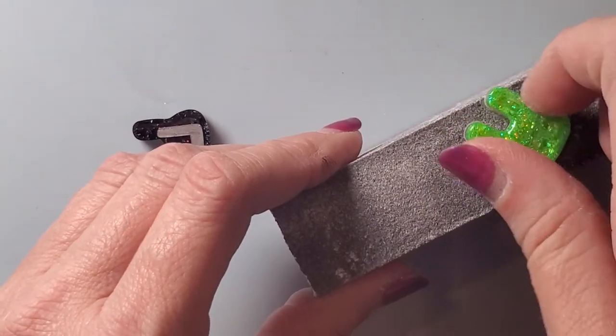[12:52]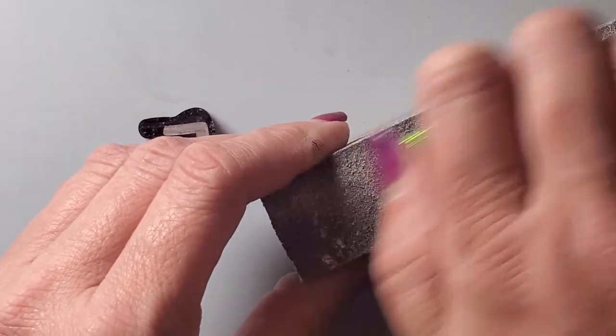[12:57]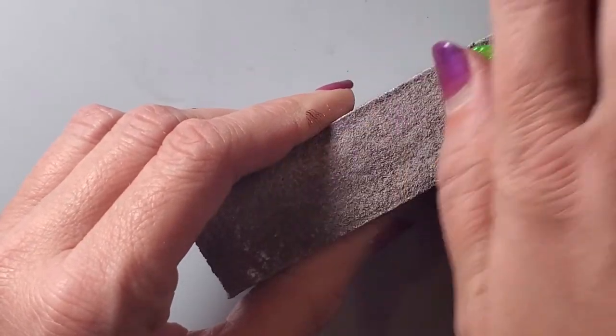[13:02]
You can either take resin and fill this all in, or I've actually just been sanding it down because I really don't want it quite that thick. Same thing with this one. It's got a little ledge all around the corners. So I actually just take some 220 sandpaper, and then I will just sand this little bit right off. Now, please watch your nails if you have nails. I am not used to having nails yet, so I sanded my nail earlier.
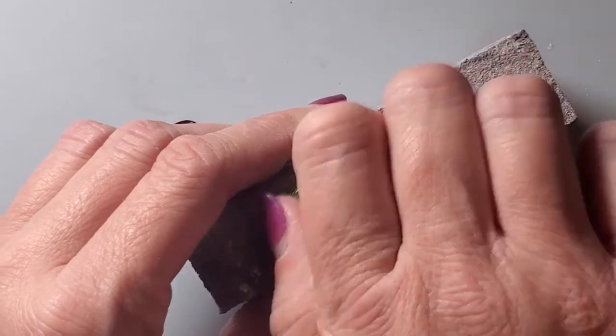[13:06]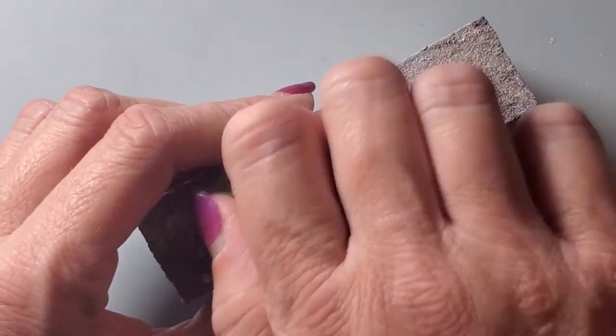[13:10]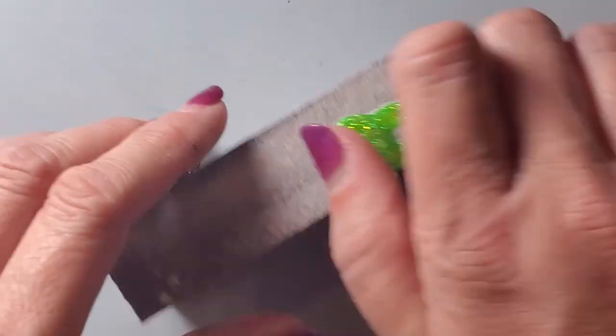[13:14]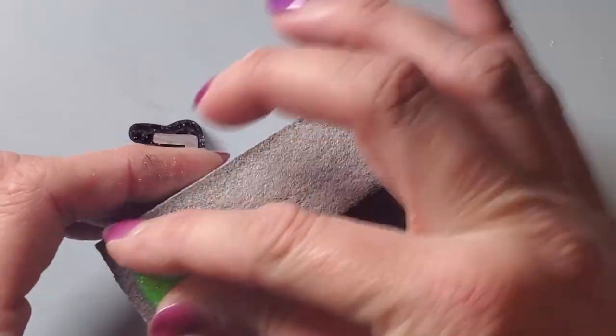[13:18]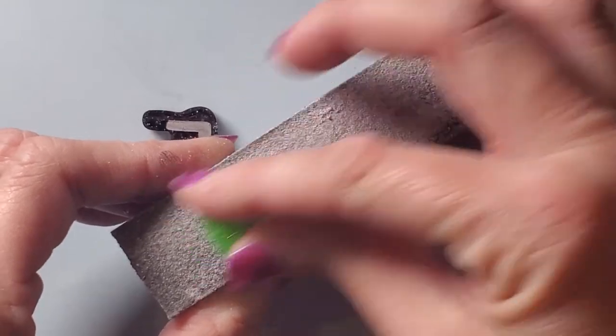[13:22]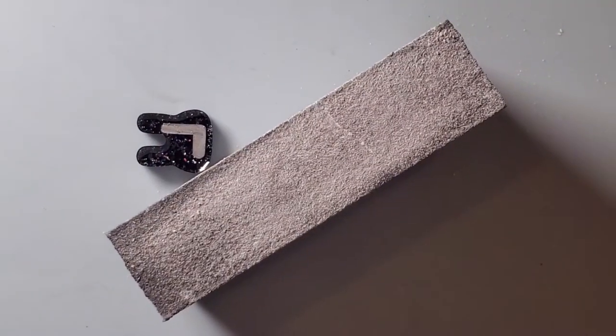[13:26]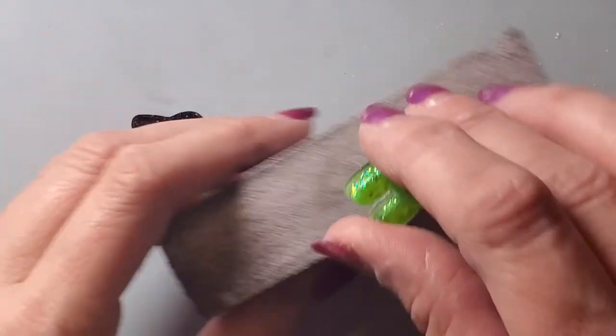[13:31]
And then I'll just take just a little bit of resin. Sorry if my screen's shaking. But see, I just sand the edge off. You probably could use a rougher one, but this is what I have on hand. I don't know that I have anything different. Hang on, guys. Let me go get that. It just fell. All right.
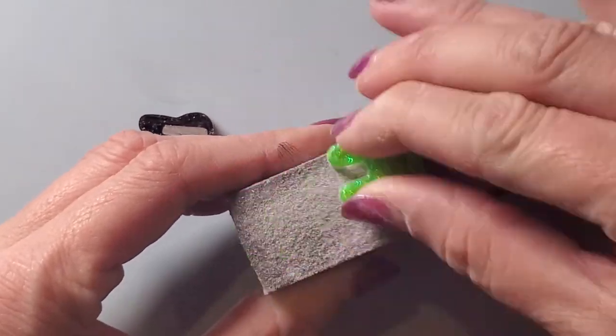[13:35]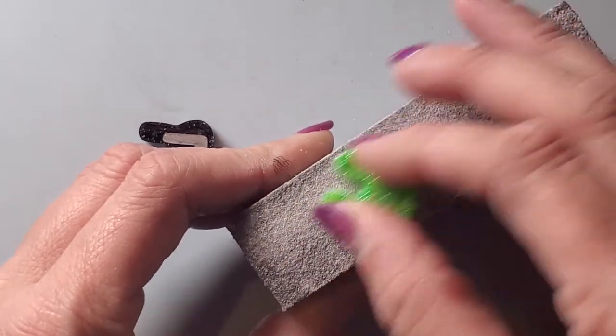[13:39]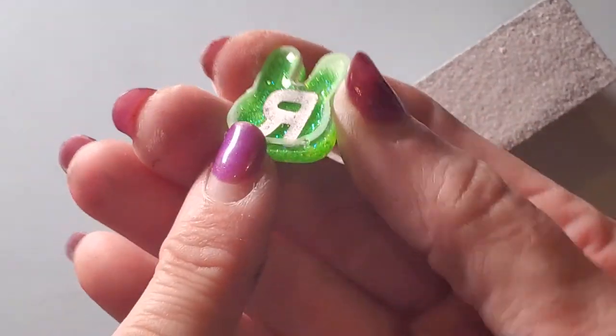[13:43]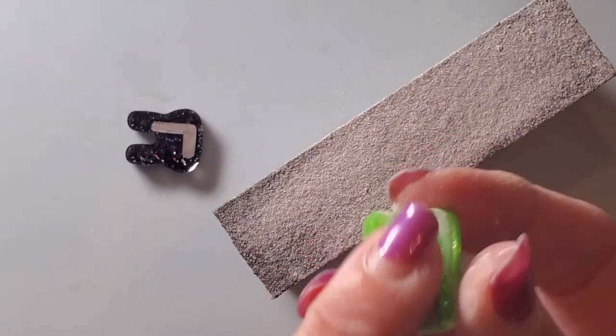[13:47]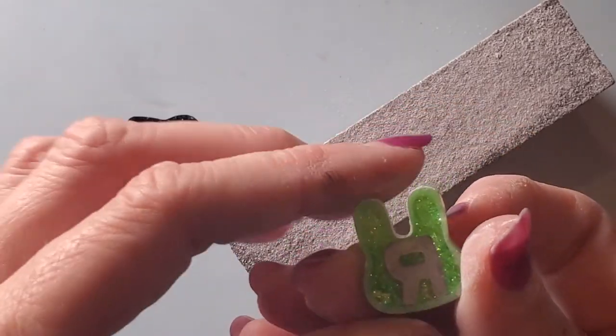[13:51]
So I'm just gonna sand this a little bit more, and then I will come back and show y'all what I do to get rid of this little sanded part, because you can either go through the different grits, but I actually just take a little bit of resin. So let me come sand this other one, and then I'll be right back.
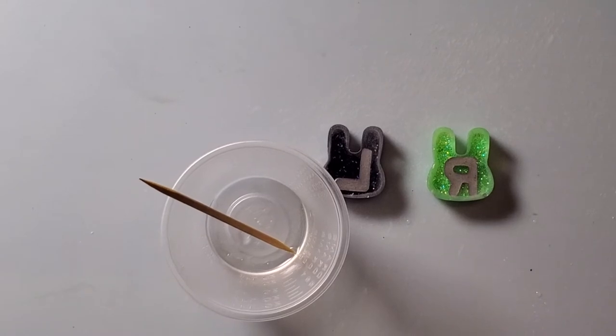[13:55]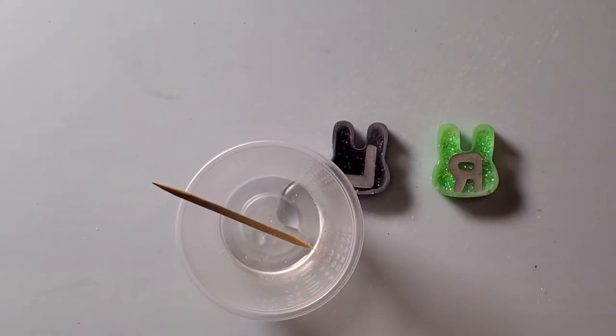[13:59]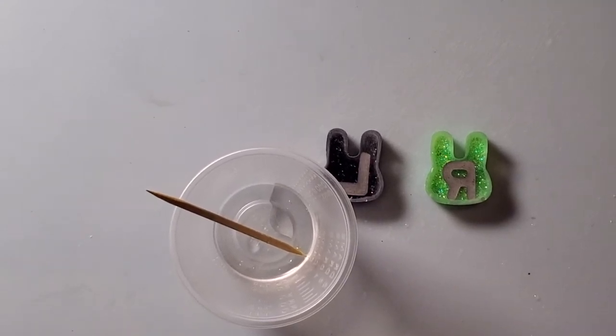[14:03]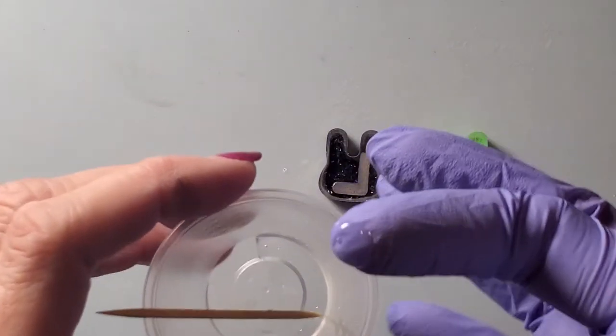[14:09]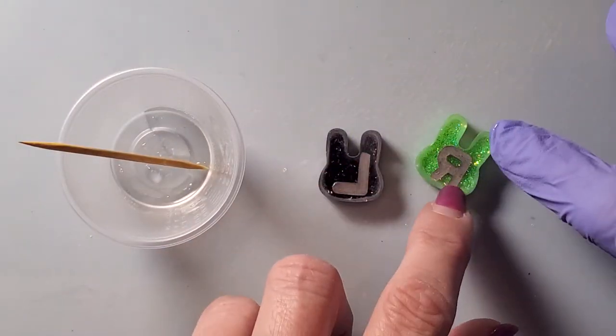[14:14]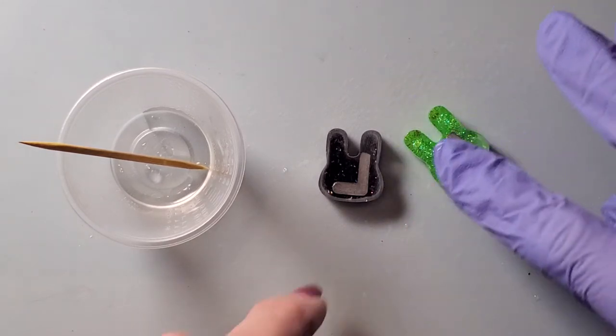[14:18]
All right, so for this, I'm just gonna put a little bit of resin in my little cup here. I'm gonna put a glove on. Then I'll just get a little bit of that on my finger. And then I am just going to rub it around to catch where I sanded.
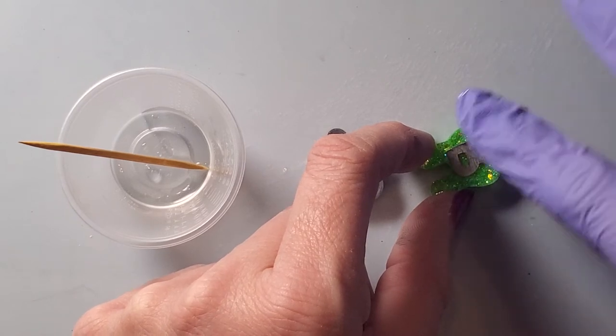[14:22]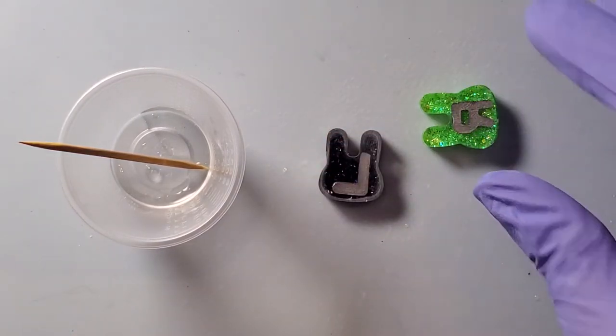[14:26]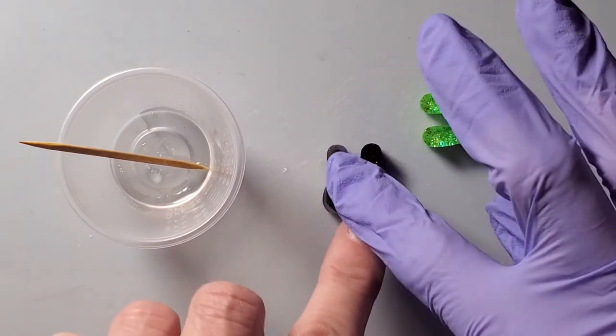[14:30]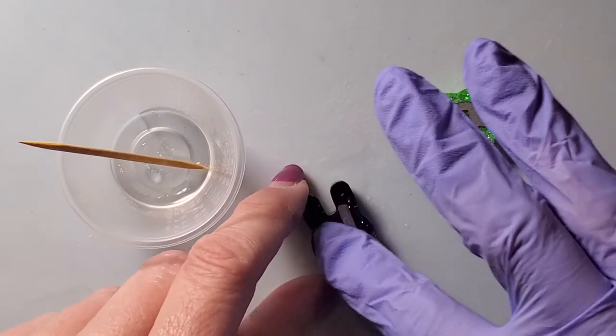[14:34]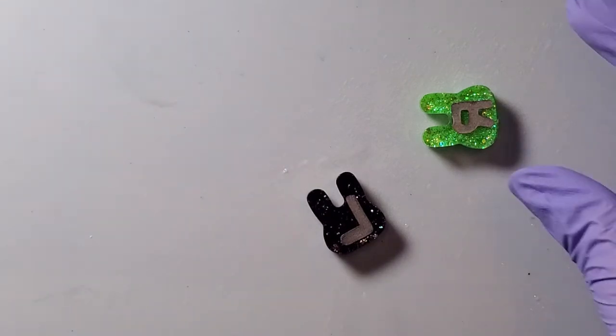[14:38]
Now, if you do clean it with alcohol, just be very careful because, as you know, alcohol does dull UV resin. So, if anything, if you want to take some water or whatever and go wipe it off, that's fine. So, I just do that and it gets rid of the dull part, and then I will go ahead and cure that. So it will be a few minutes for that to cure.
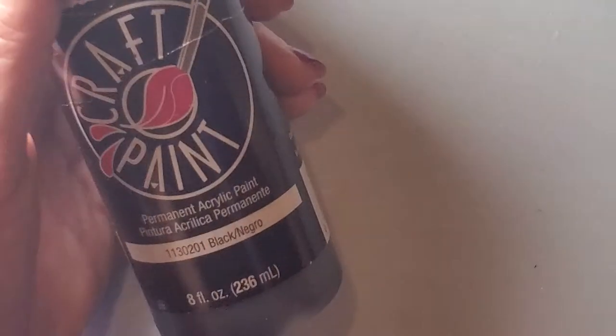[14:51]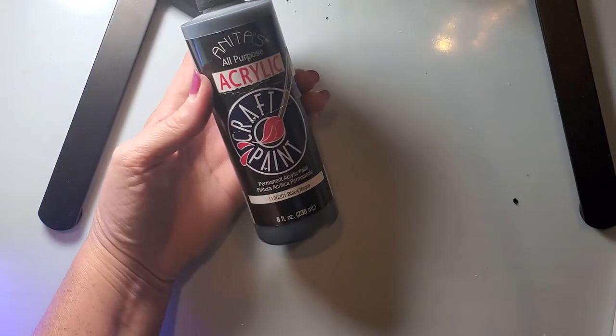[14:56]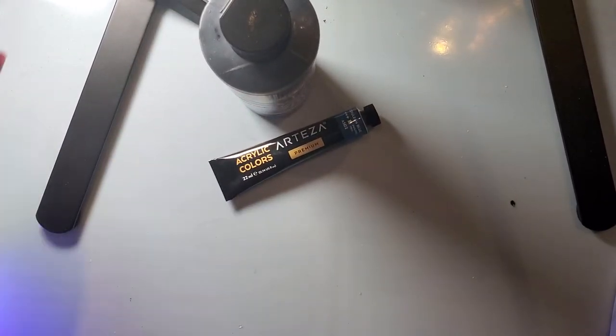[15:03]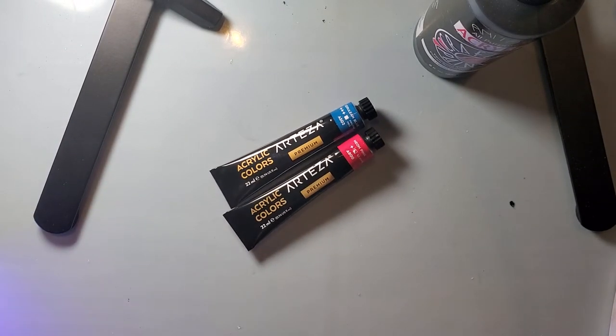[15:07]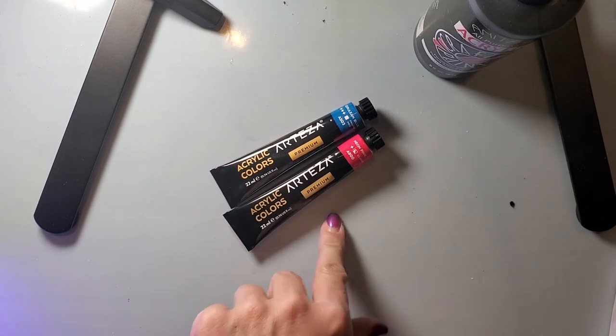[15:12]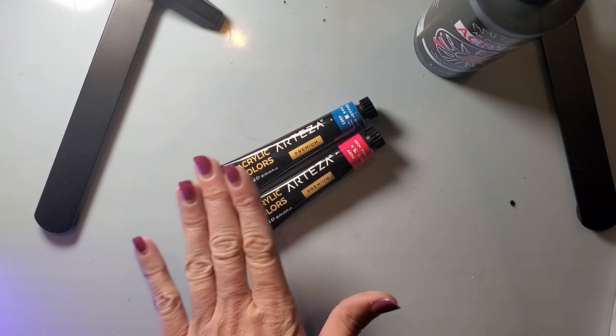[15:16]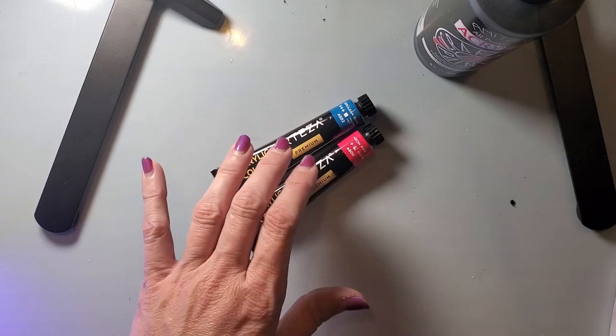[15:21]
So for the acrylic part, I have some black acrylic paint that I think I got from Hobby Lobby, maybe even Michaels. So this is my black one. And then I have a whole set of Arteza paints that I bought because I do pencil pens. I use this to paint the pen, and then add the glitter on top of that before I resin it. So I will be using these, I think, on the black one.
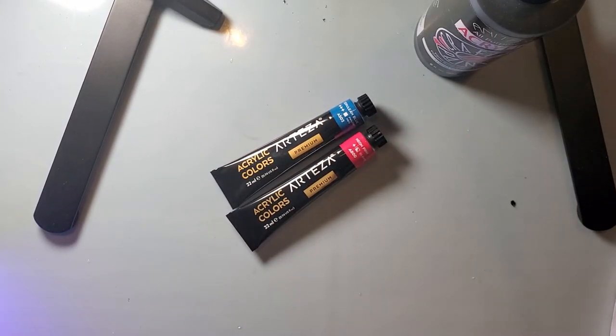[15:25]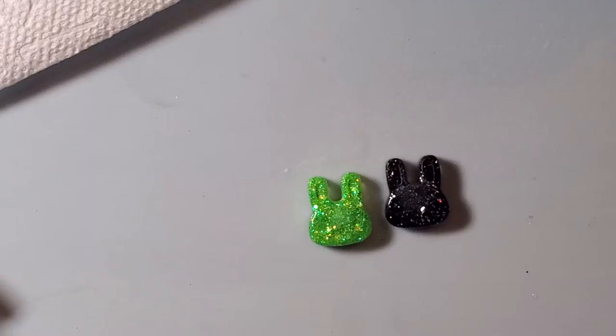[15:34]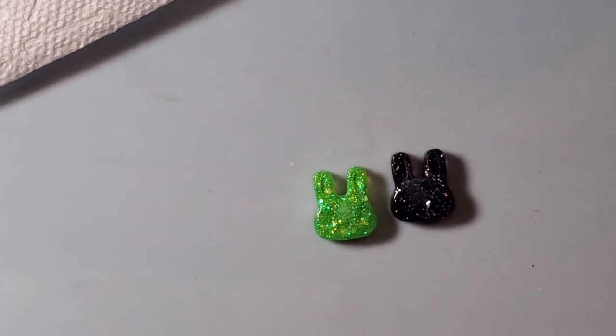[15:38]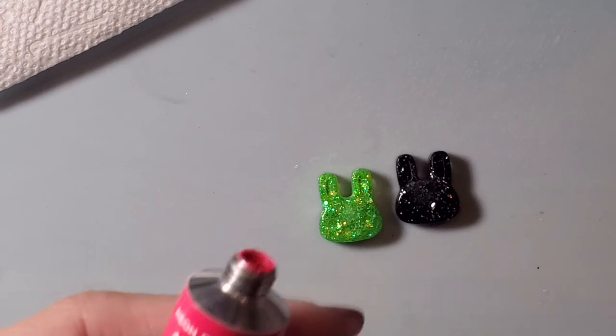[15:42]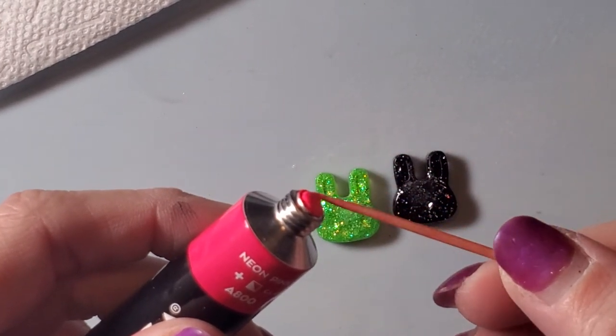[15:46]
And I think I'm going to use pink and black on the green one. So we'll see. I really haven't decided what particular colors I'm going to use yet on which ones. But I'm going to let that cure and I will be right back in just a bit. Okay, so now I'm going to come color in their little eyes and stuff. And their ears. So I just use a toothpick. And I will just get a little bit of the acrylic on it.
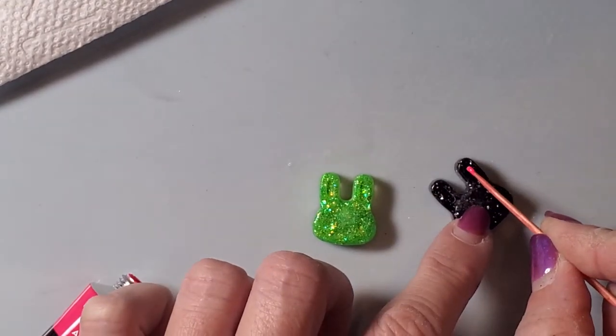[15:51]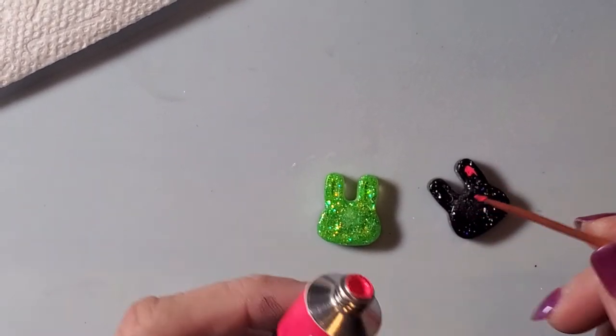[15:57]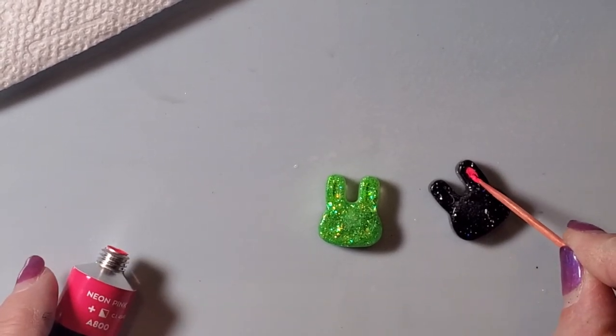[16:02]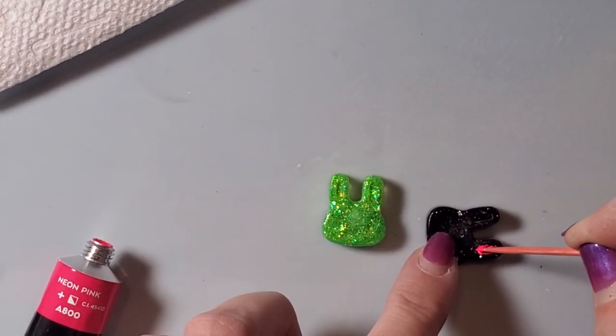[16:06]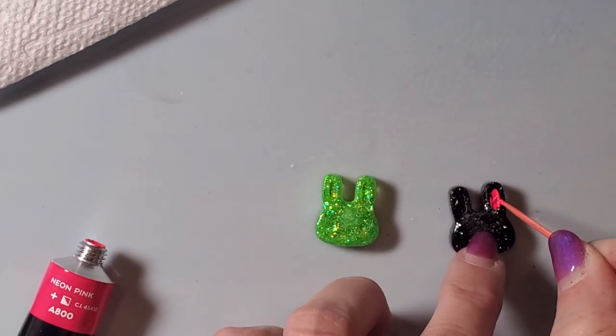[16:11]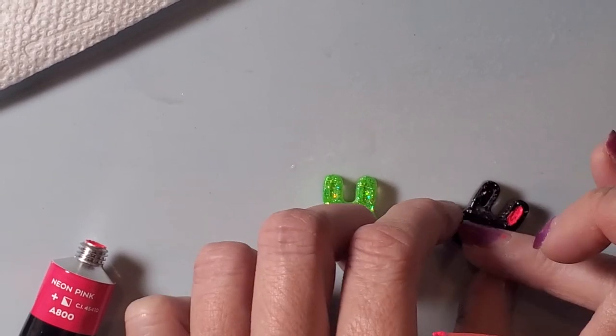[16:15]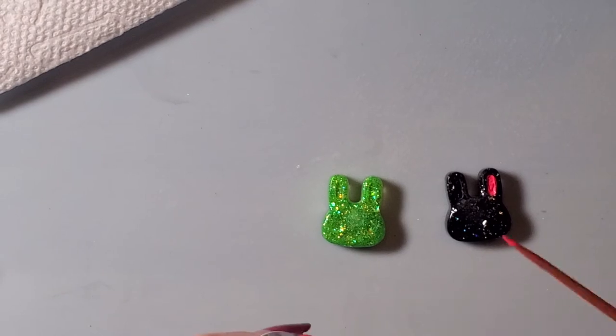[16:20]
And then I'll just kind of dab it here and there. Now, I'm pretty sure that somebody has a brush that they could use for it. But I honestly don't think I have a teeny tiny brush. So this works for me. And then if I catch anything that I shouldn't, I can just use my finger and wipe it off. I haven't really had much of an issue. Let's see, I'll just take my finger and wipe to get any excess that falls outside off.
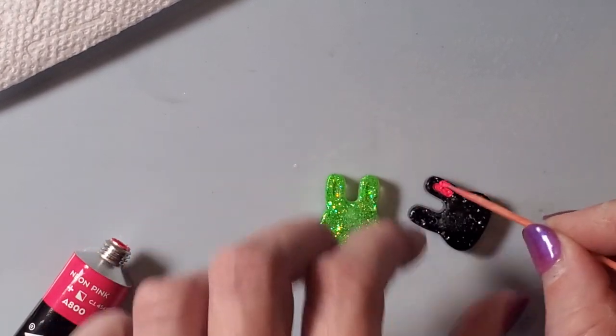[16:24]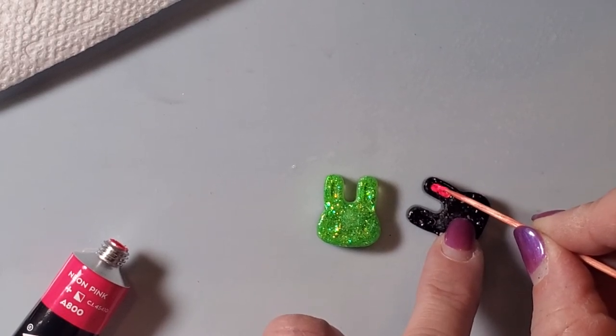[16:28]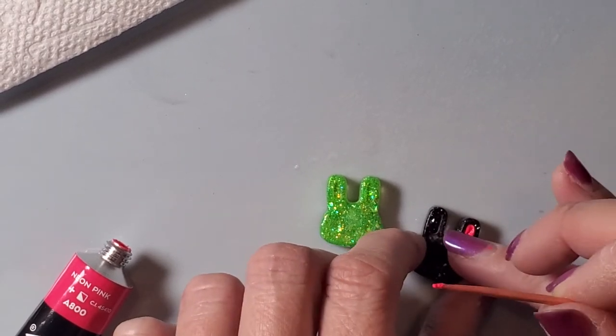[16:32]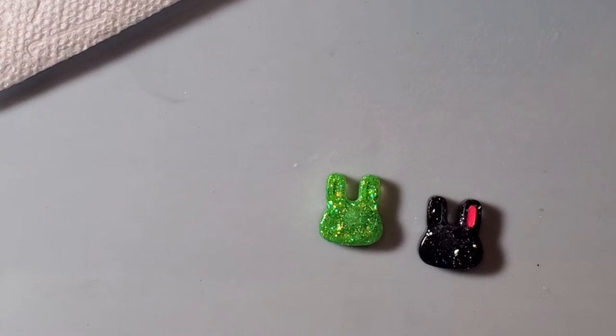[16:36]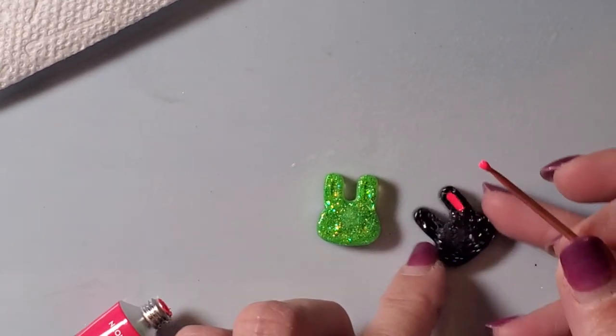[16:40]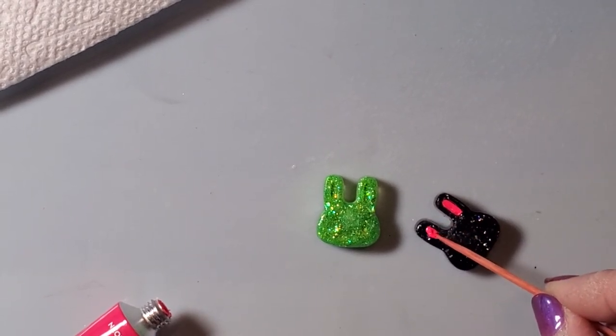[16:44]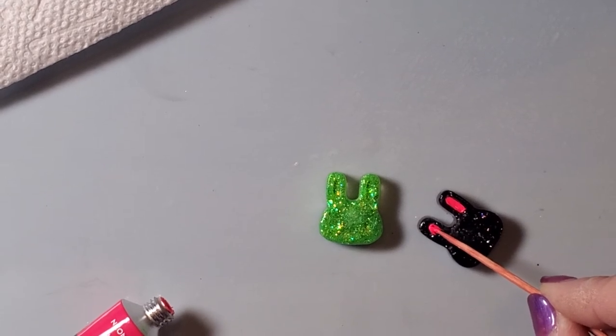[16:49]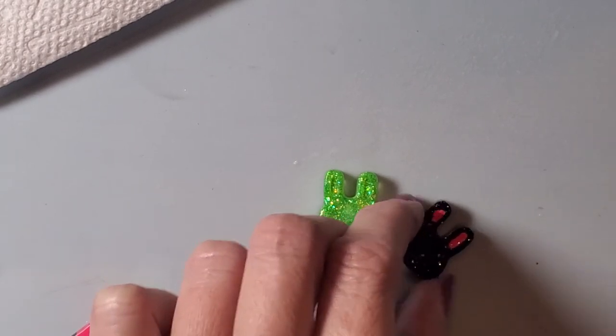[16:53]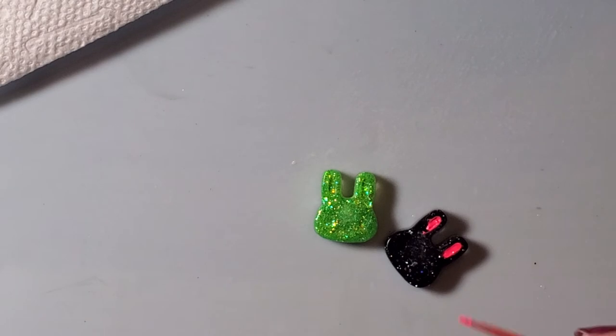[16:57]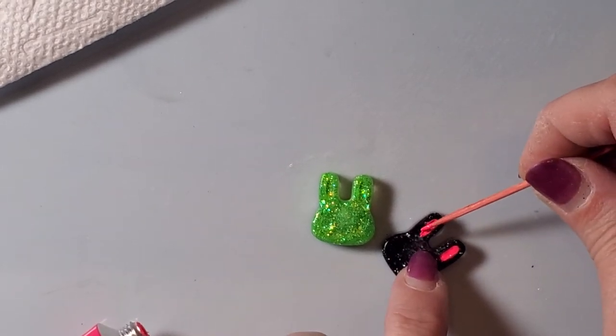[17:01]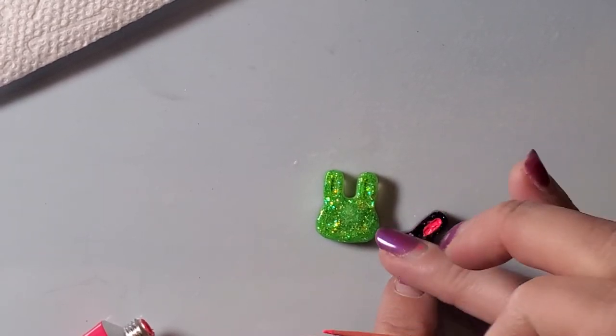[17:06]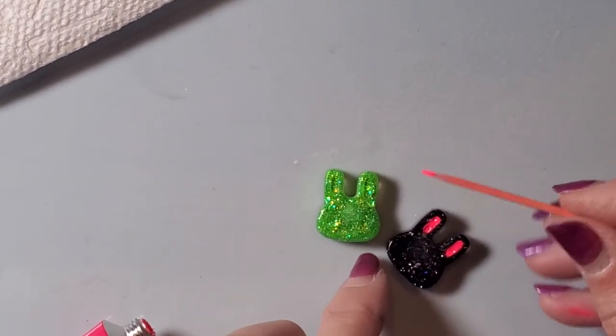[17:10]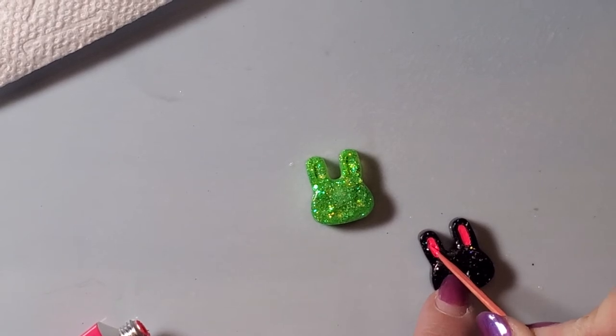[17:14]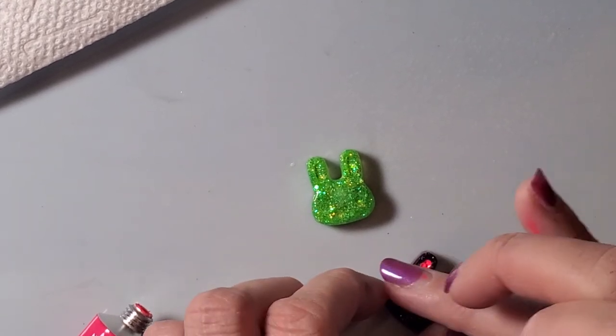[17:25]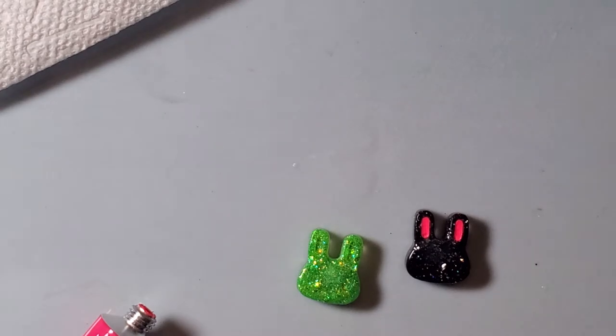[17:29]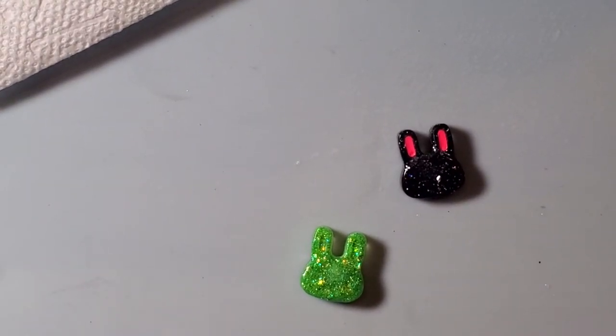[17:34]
See? Now, some of them are a little bit easier to see if you kind of maneuver with the lighting, so that you can see where the little holes and stuff are. The black one's not so bad. If you have to, you can also wipe off your toothpick and kind of readjust what you need. So that's that one for the ears. So now I'm going to come do the ears on the other one. I actually think I'm going to do his little nose.
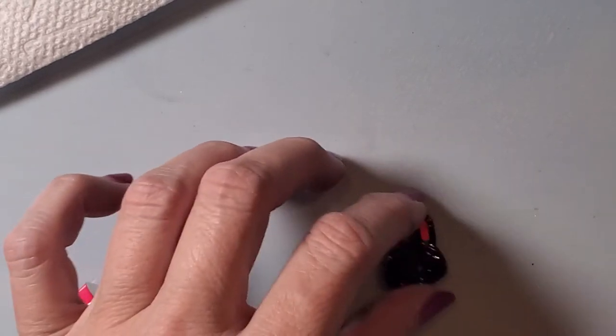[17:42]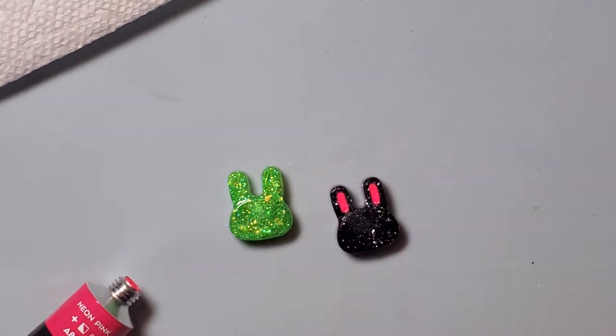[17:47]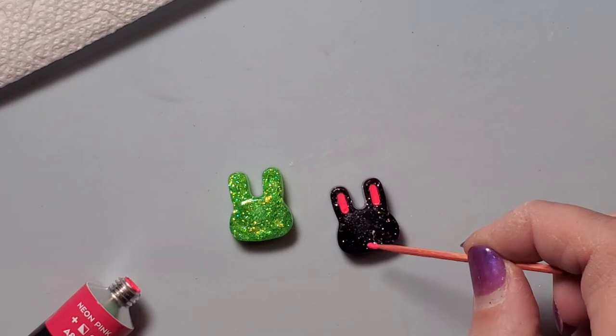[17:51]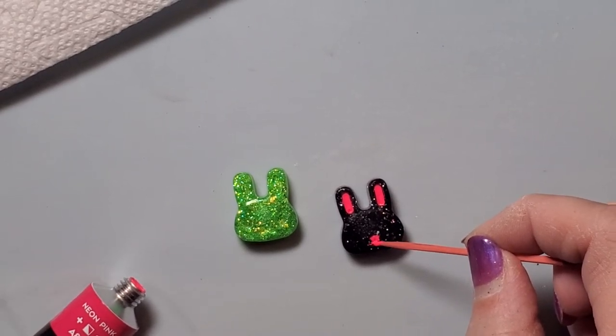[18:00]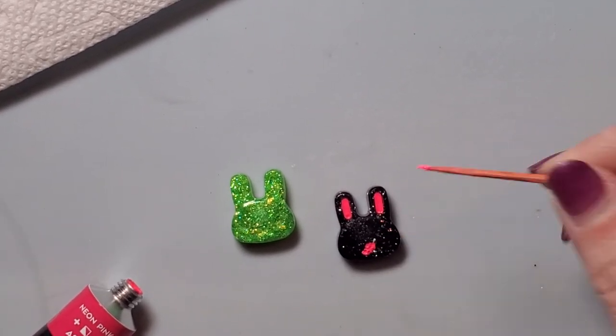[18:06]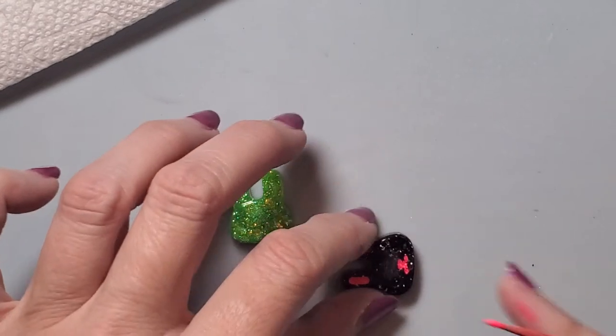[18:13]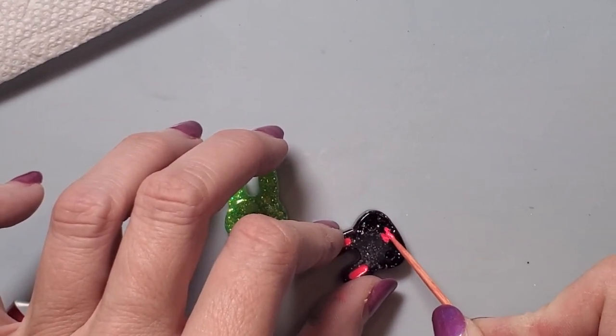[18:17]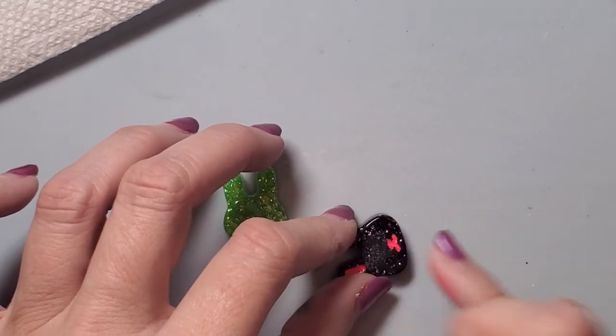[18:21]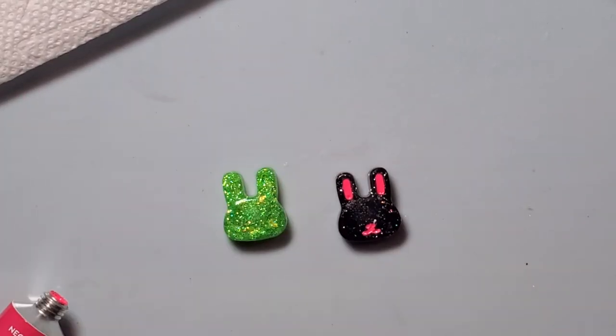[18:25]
Now the nose and the mouth is a little bit harder to find. Sorry if my lighting and stuff, I really don't have a very good setup yet for doing videos because, like I said, I really don't have much area right now to work with. So we keep getting told that they're coming. So I guess hopefully they'll come soon. And then same thing, I will just take my finger and wipe off the excess. So that's his little nose.
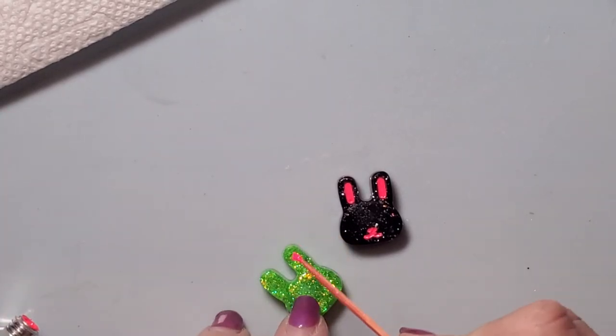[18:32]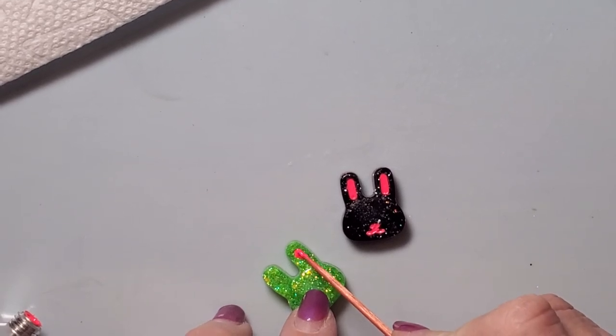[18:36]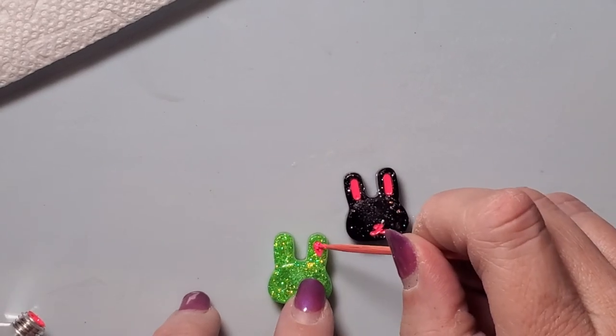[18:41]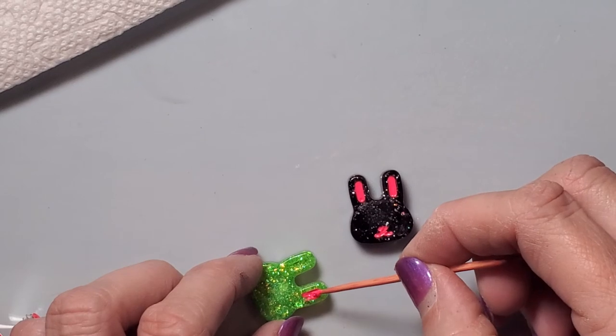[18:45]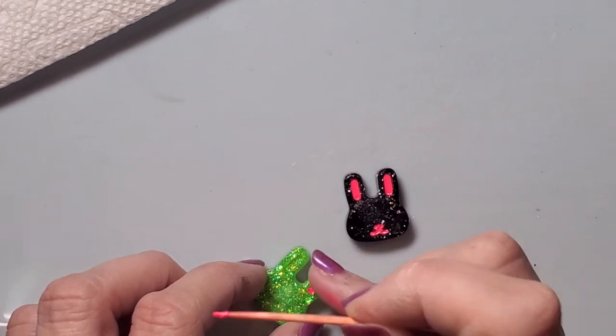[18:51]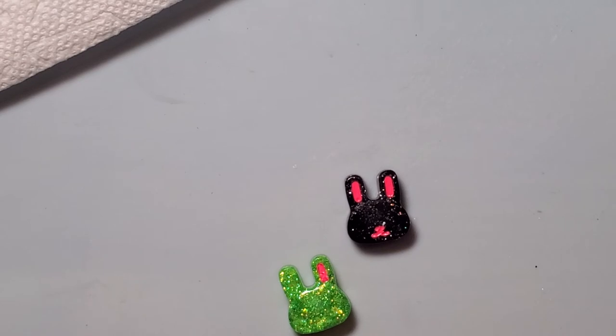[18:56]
So now I'm gonna come do the pink on the other one since I'm working with pink before I clean off my toothpick. And I honestly think I'm just gonna stick with blue eyes on both of them. You can do it in whatever colors that you like. And then after, I'm gonna use my heat gun to help try to dry this because it is a little bit thicker of a paint that I'm putting in here.
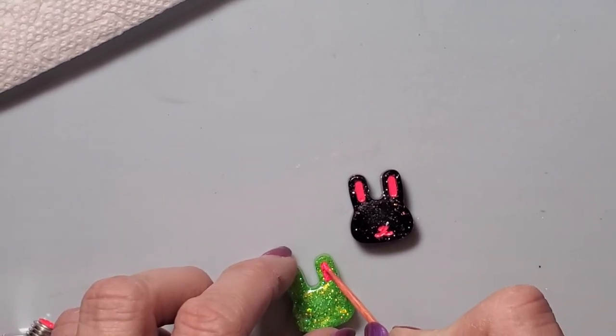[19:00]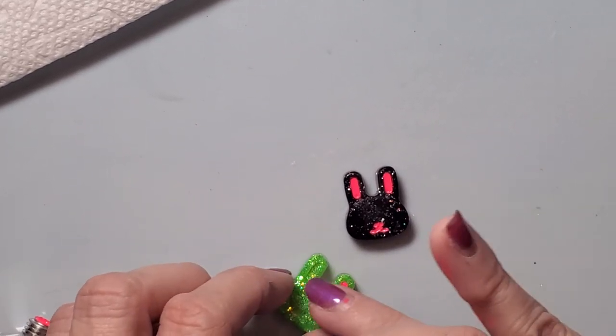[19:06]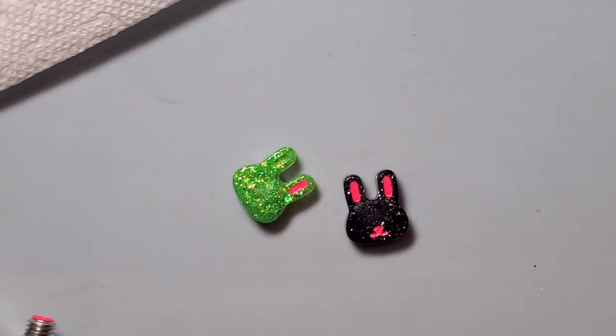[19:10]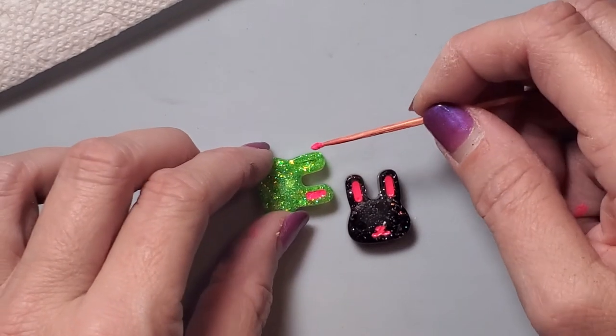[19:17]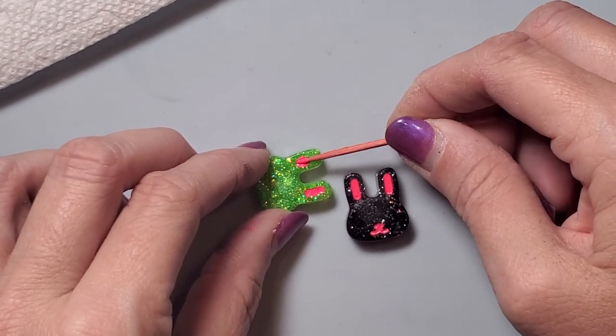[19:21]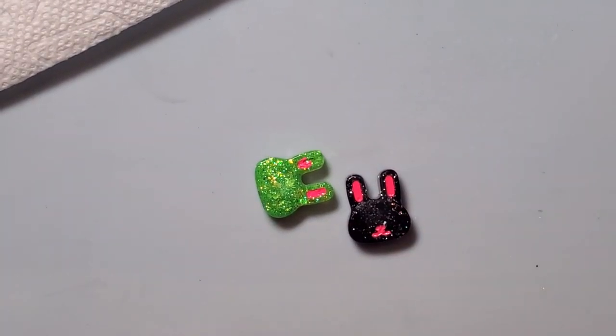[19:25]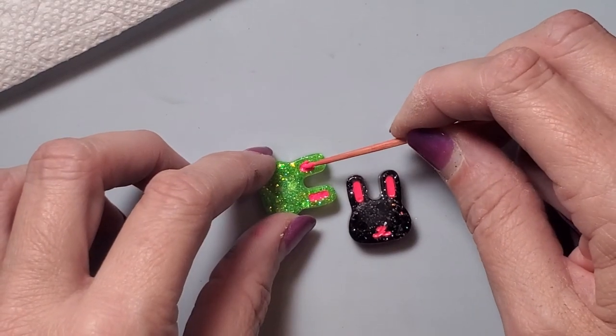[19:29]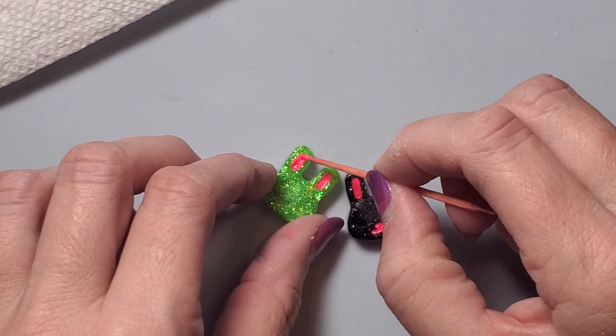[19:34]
So the bummer is that currently in my craft room, I don't even have a seat right now in here. So I have to stand the whole time that I craft. So I'm hoping that once I get my craft room back together, I will be able to do different videos. I don't know if anybody wants Cricut videos or what, but I can do some Cricut tutorials. I do dabble with other resins too, resin projects, because I do tumblers and stuff.
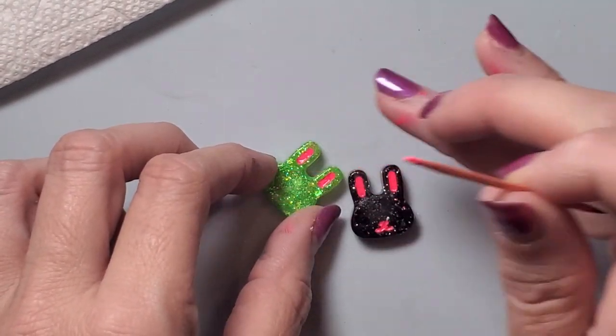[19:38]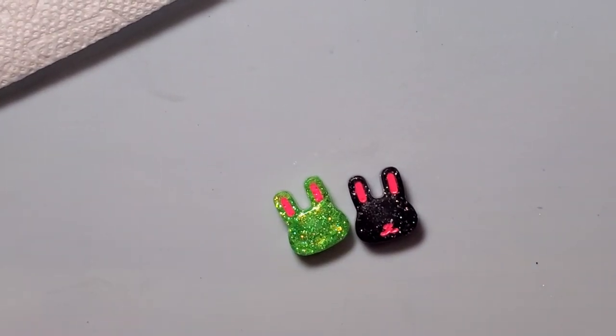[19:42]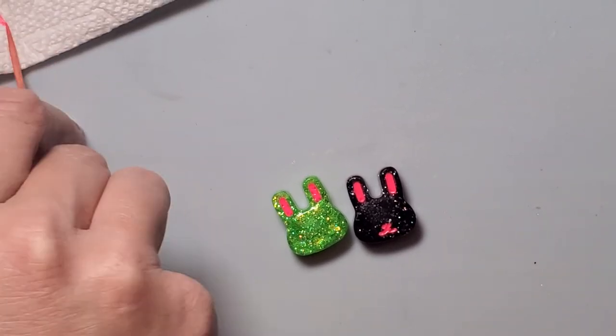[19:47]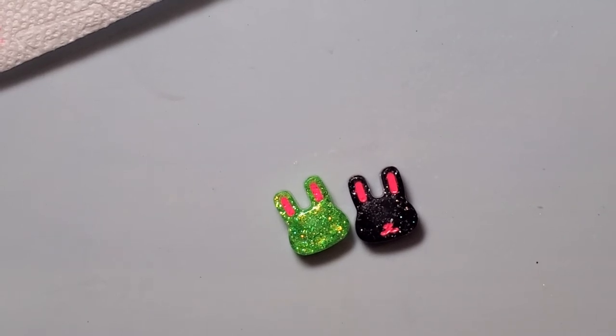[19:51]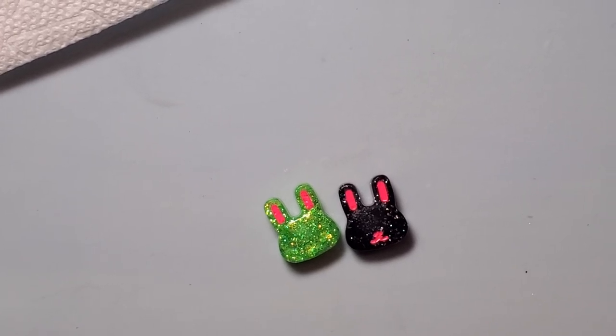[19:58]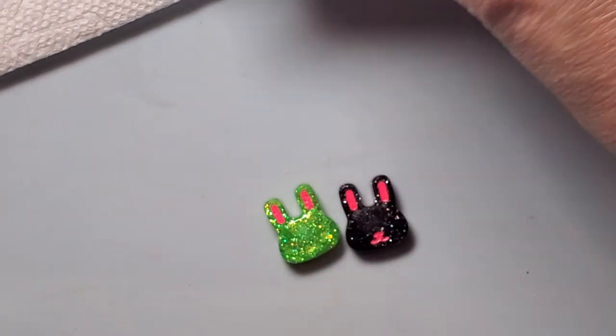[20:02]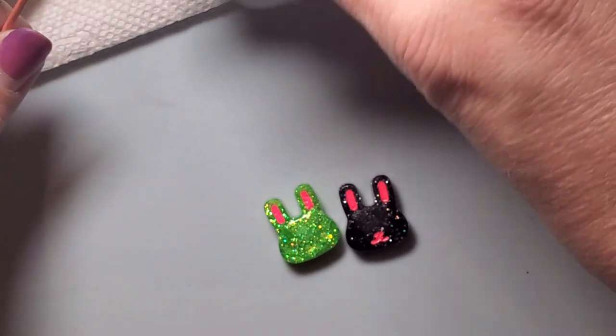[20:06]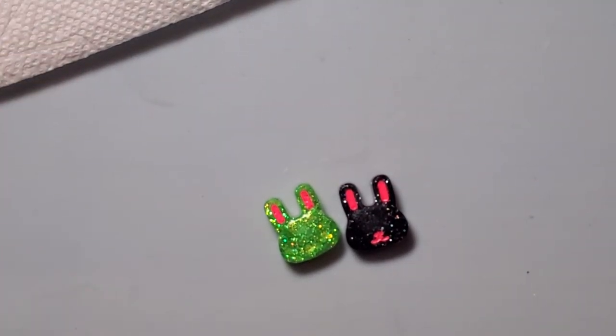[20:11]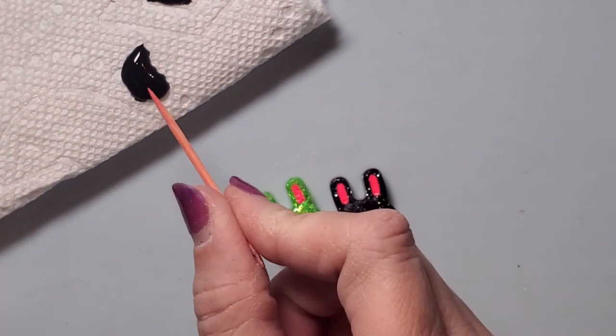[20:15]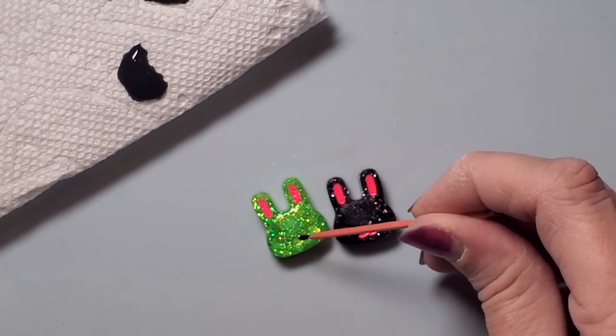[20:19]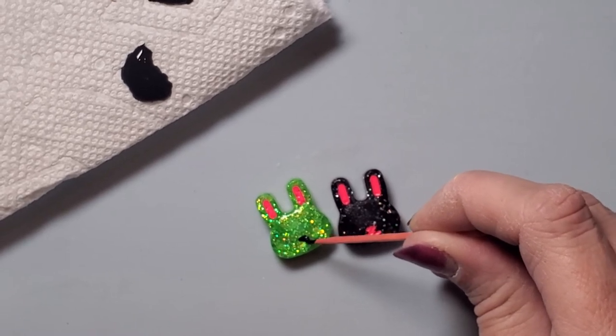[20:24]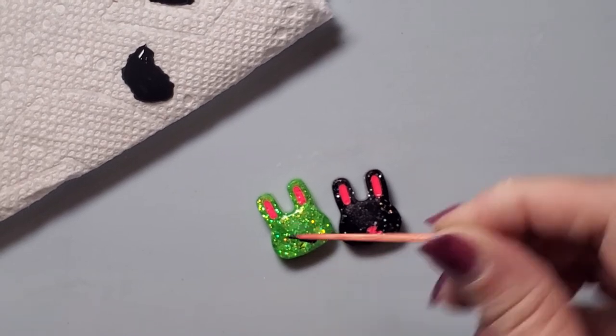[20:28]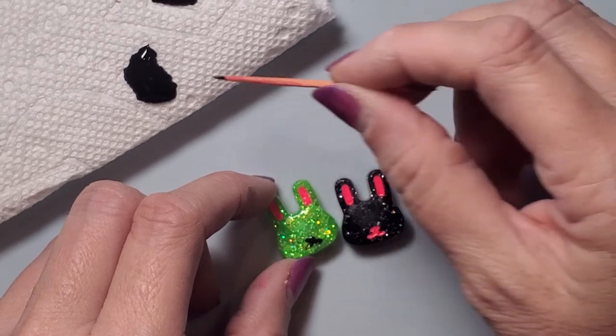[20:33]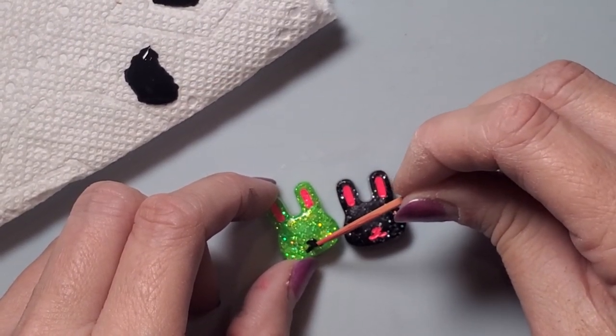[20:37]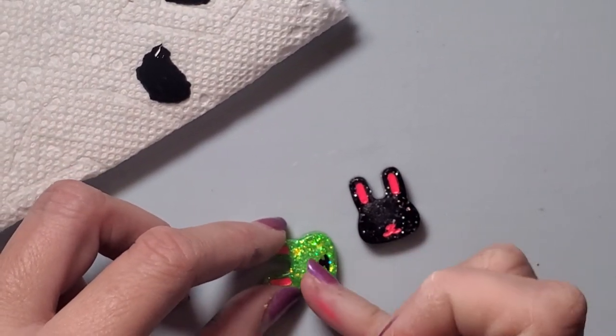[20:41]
Let's see, do I want his mouth? I think we're gonna do his mouth black, just to be a little different. And then I'll do maybe blue eyes. I'm gonna have to see what that blue looks like on the black. I might need a lighter blue. So I'm just gonna come put a little bit of paint down. And honestly, that's entirely too much, but that's okay. So now I gotta come find his little nose. And I will wipe off any excess.
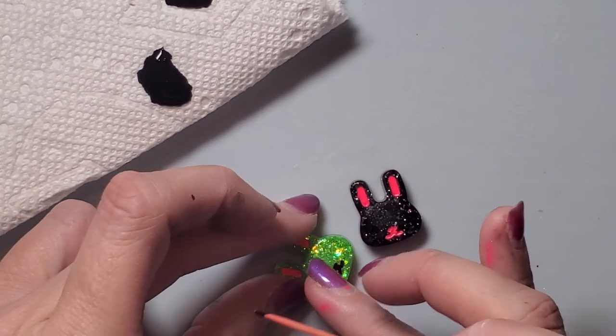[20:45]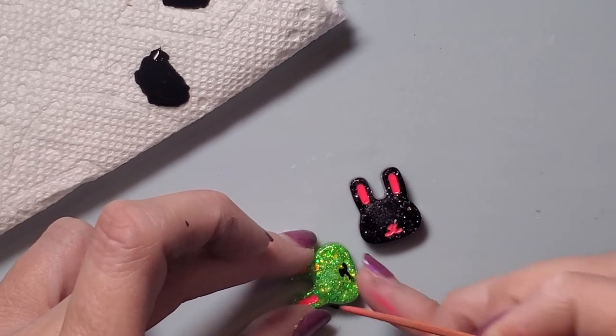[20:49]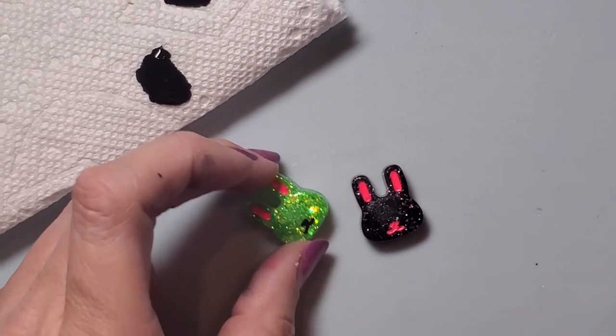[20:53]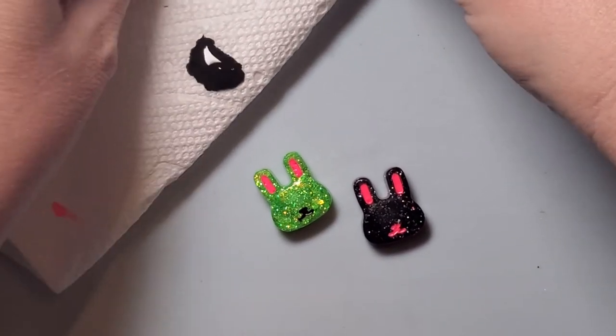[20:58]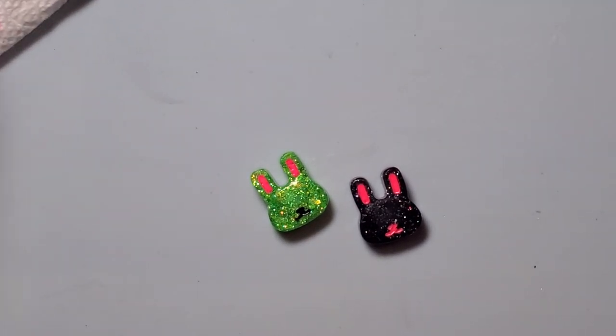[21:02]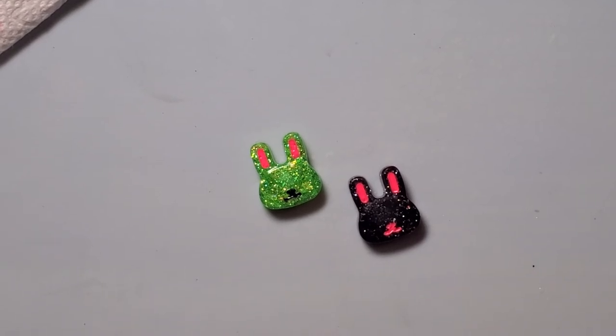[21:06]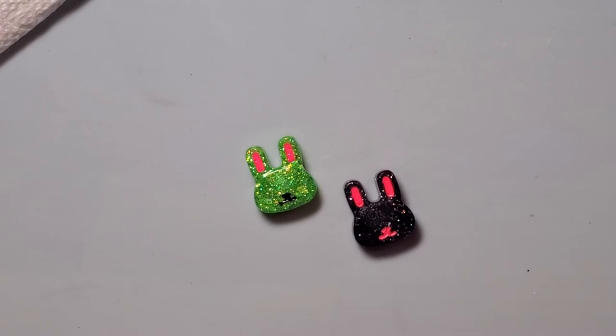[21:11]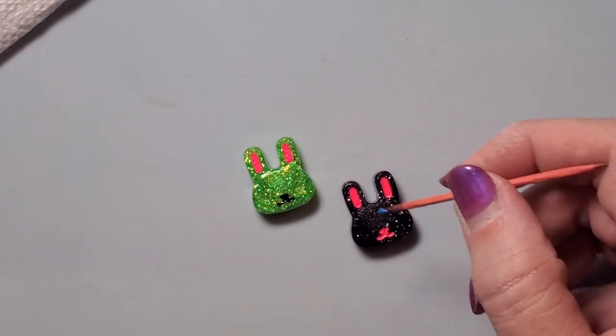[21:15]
And like I did say before, just be careful with your alcohol because alcohol does dull UV resin. Now, if you were using regular two-part resin, go for it. I mean, alcohol is not going to do anything to it. No, I think blue will be okay on this one. Oh yeah, look at that.
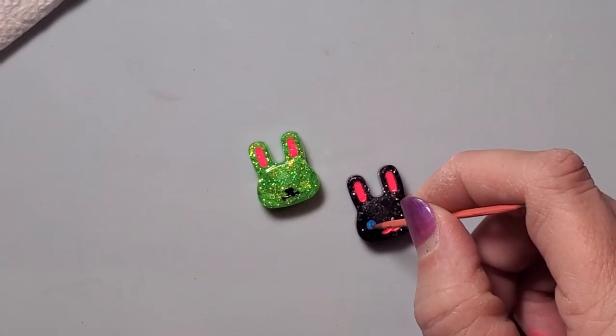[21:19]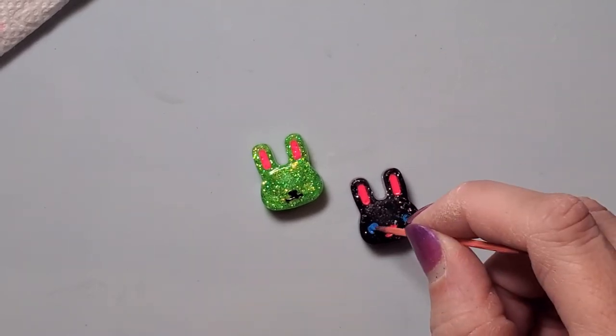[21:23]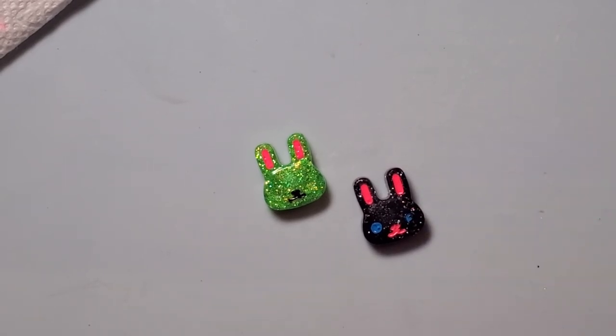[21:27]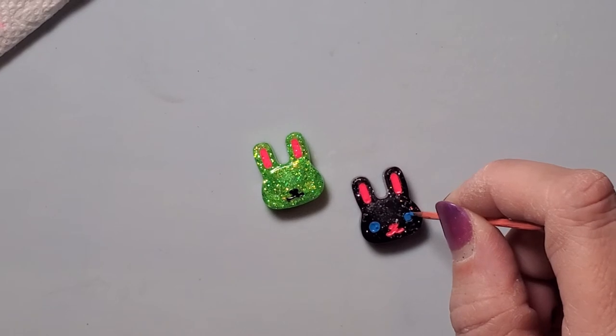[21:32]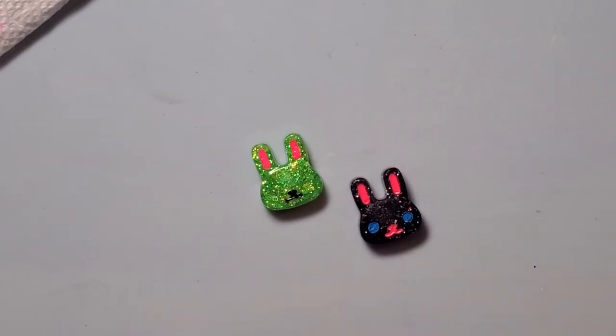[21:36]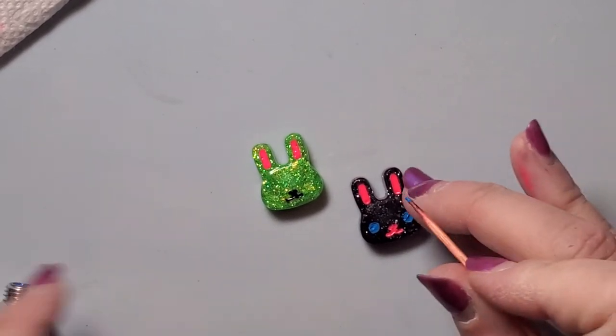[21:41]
And honestly, if you really wanted to get fancy, you could go and put the little white dots for the irises and stuff like that. I am crafty, but I don't think I am that crafty. I would probably totally butcher that up.
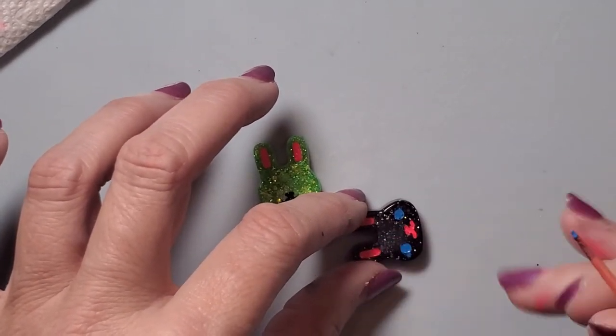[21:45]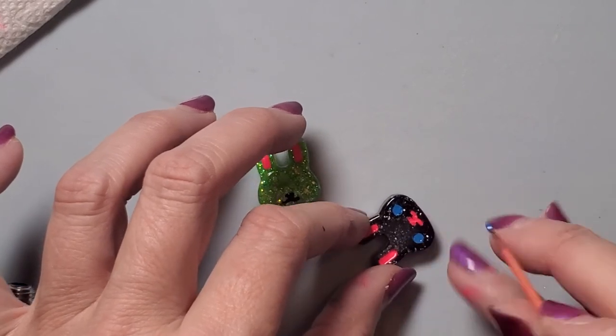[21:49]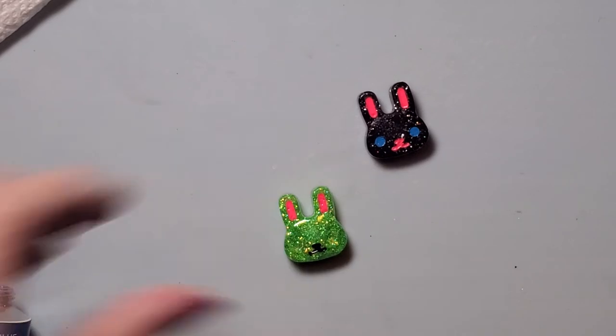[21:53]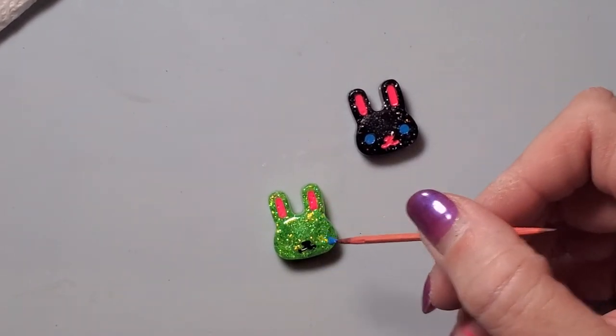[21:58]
So that is that one. I think I'm gonna put blue eyes on this one too. So yeah, you can have as much fun with these as you like. Make them all sorts of colors.
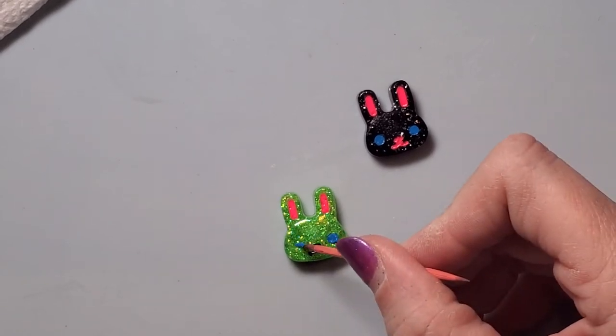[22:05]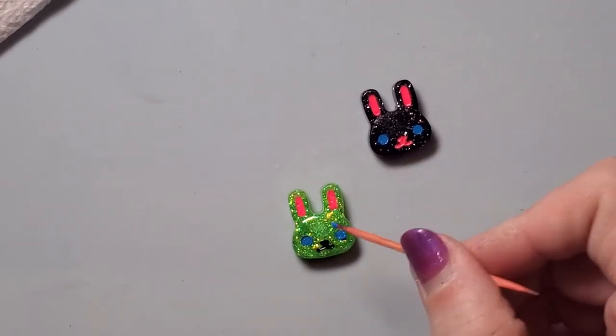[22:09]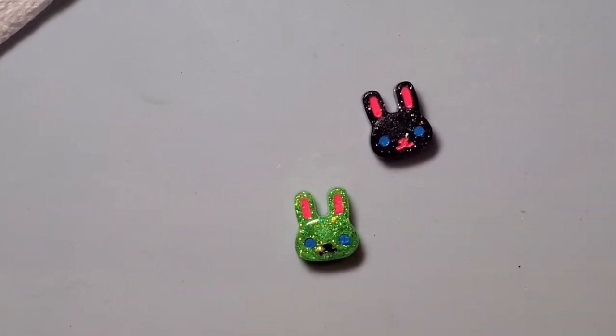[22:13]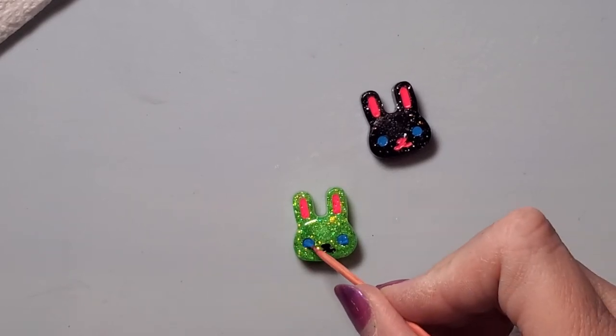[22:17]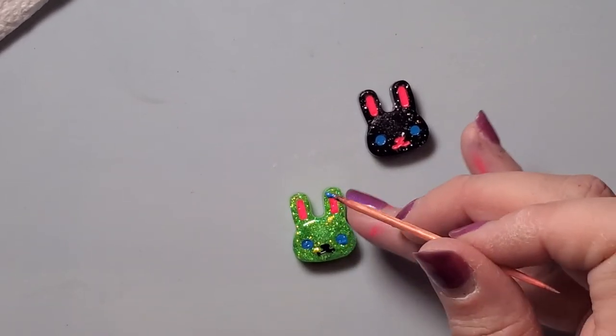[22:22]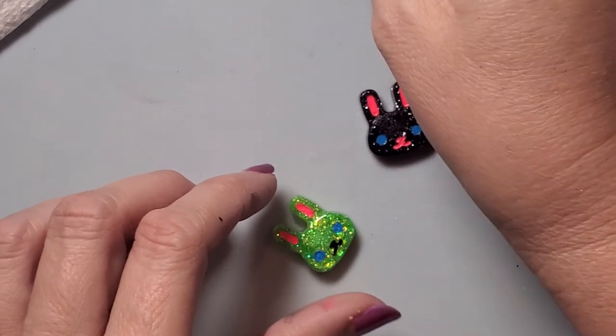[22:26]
I think the other set I did for my friend, actually, she's the one that's ordered several of these. I think I just stuck with black because honestly that was the first time I had done it using acrylics. I had never used acrylics in resin before.
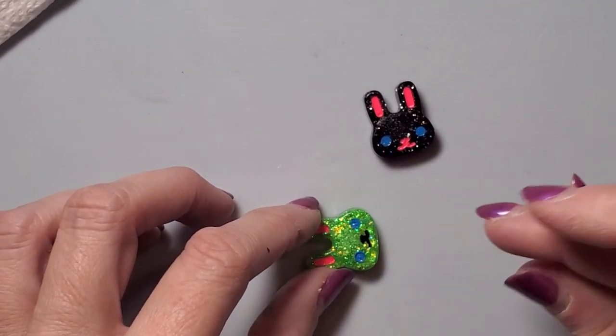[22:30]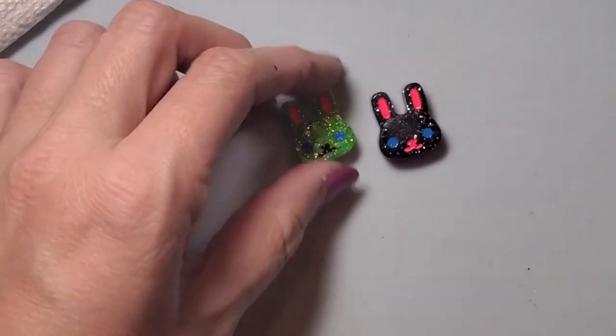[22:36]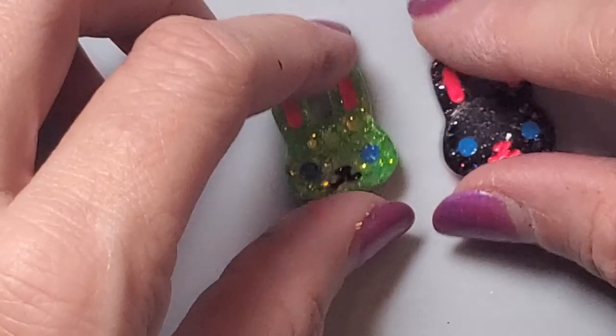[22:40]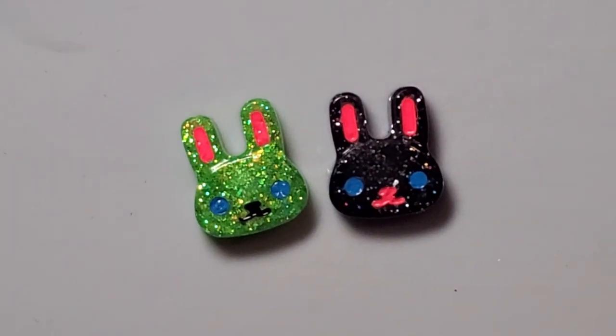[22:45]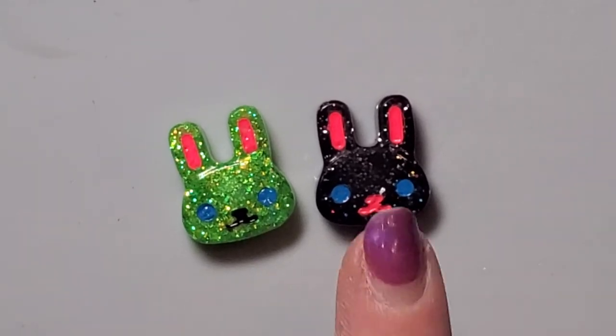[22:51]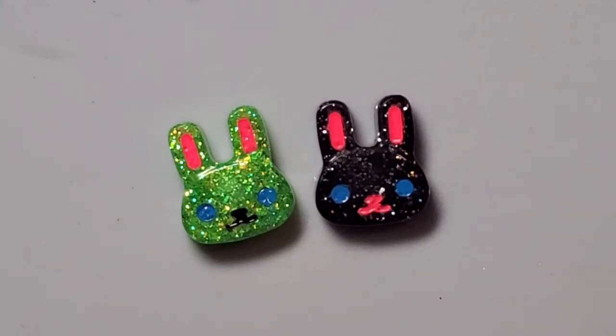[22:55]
All right. So that is my bunnies. So I am going to pause and come back. I'm going to take my heat gun to them and dry them. And then I will go ahead and put some little resin to fill in all the little additions here, and I will be right back.
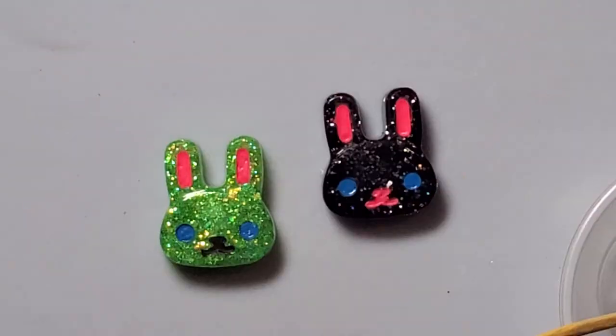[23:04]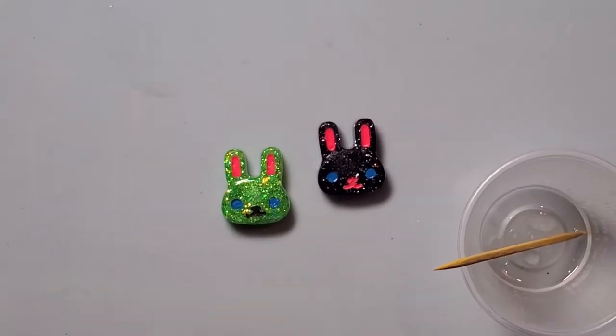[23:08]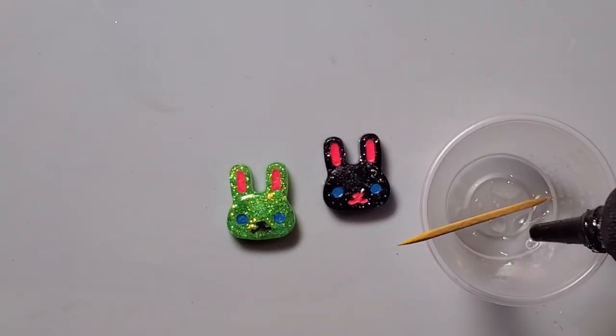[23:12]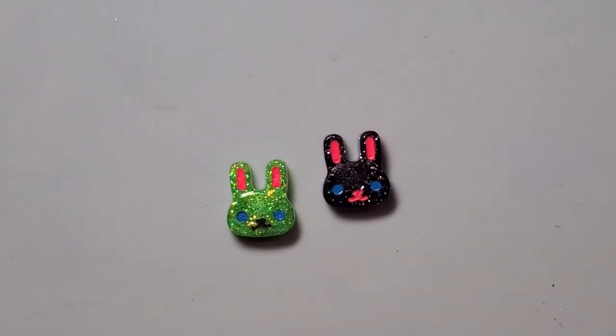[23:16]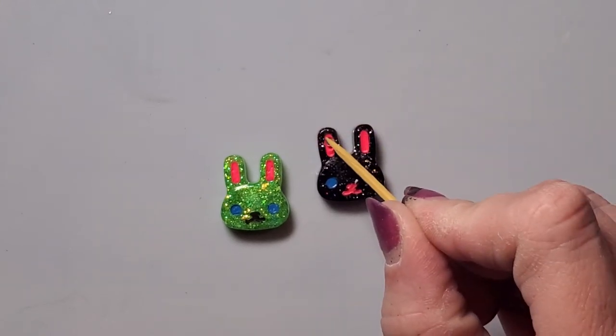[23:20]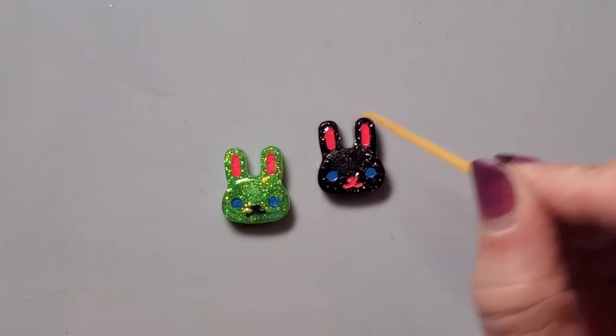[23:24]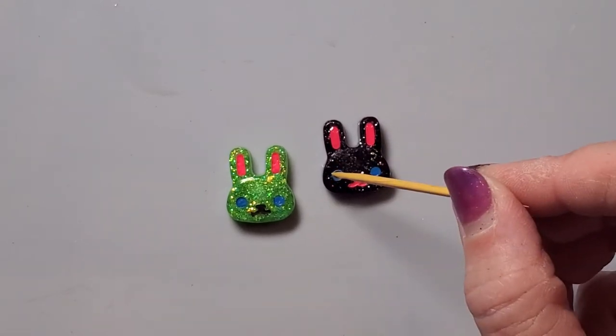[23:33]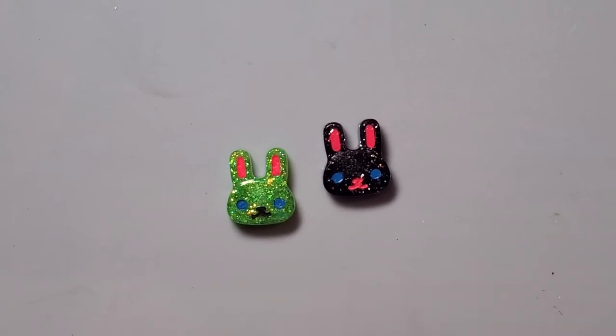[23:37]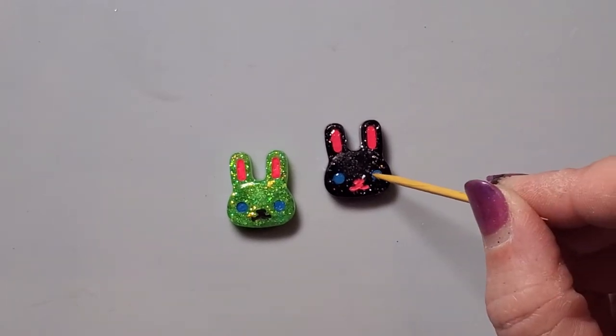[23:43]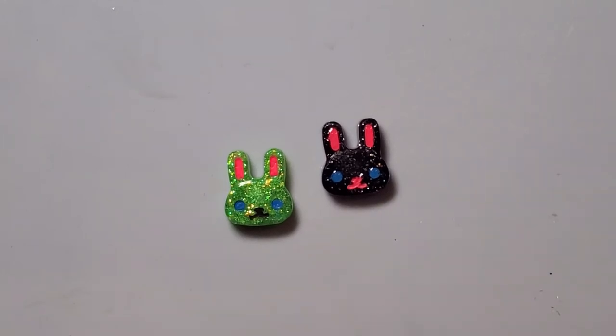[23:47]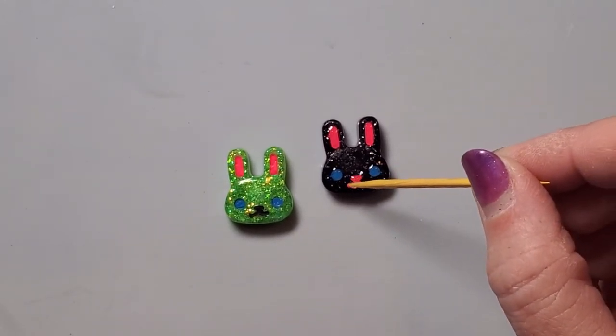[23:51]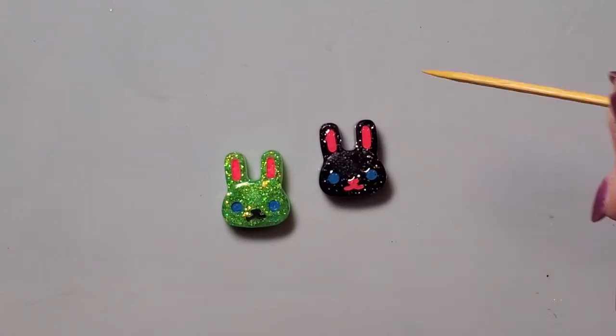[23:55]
All right, so it is dry, so I'm just going to take some of my UV resin. I'm going to drop it right in here, and then I am just going to get it on the tip. And I will drop it right in, to each little spot that I filled. And then you can just use your toothpick to kind of drag it around to fill.
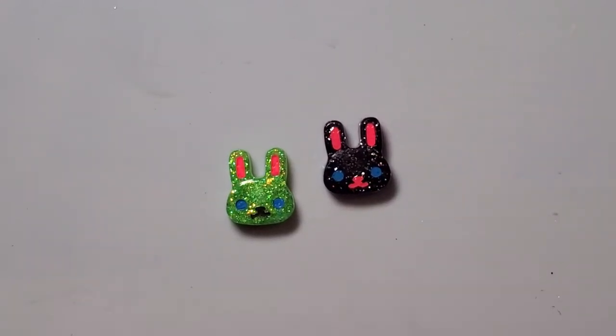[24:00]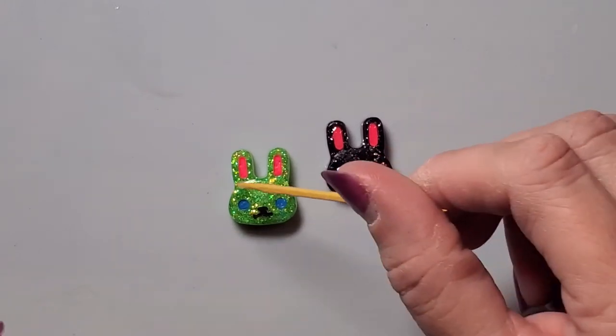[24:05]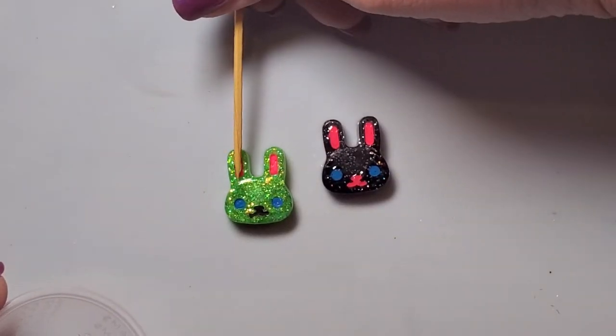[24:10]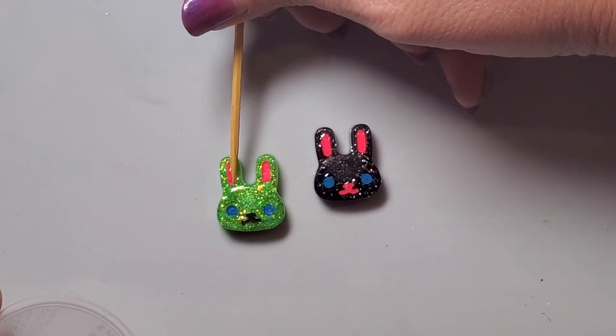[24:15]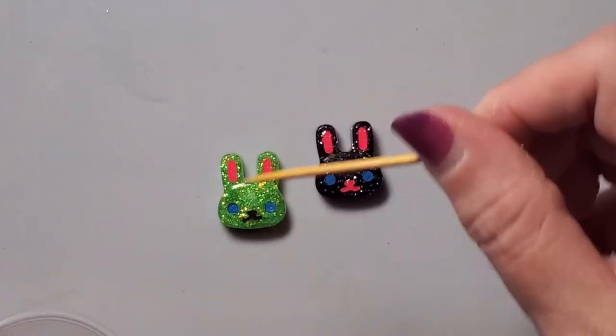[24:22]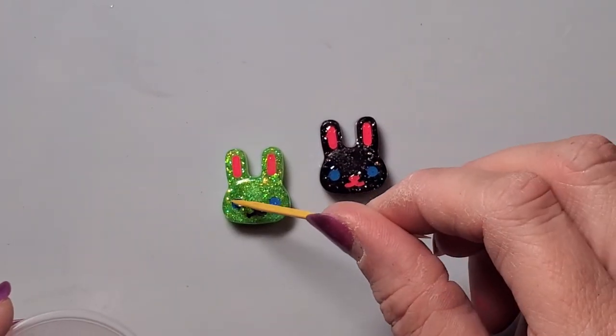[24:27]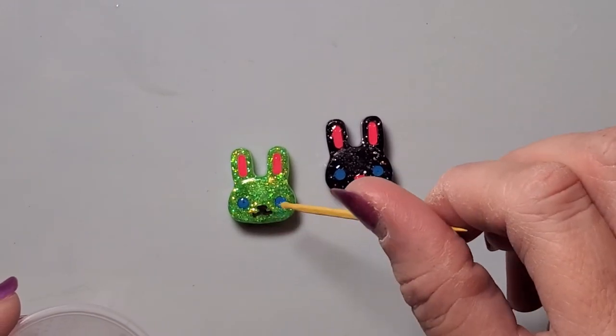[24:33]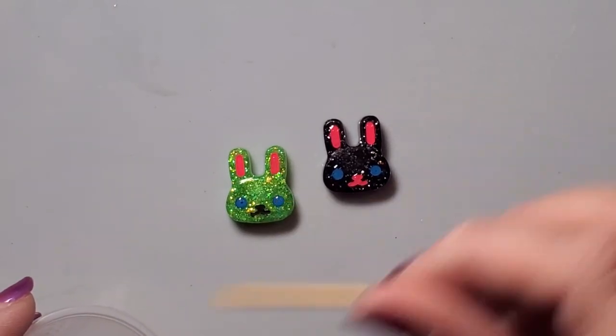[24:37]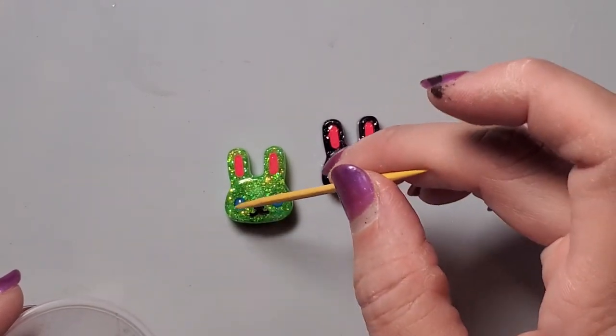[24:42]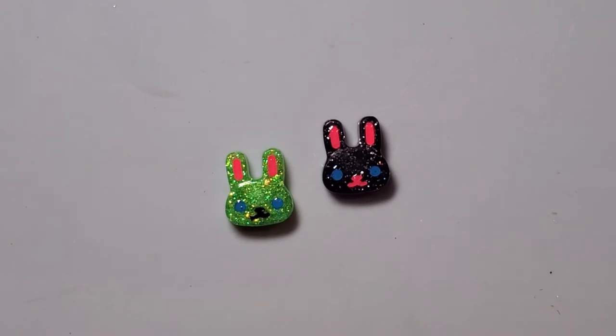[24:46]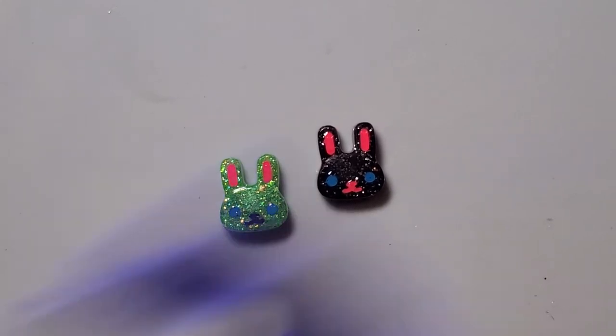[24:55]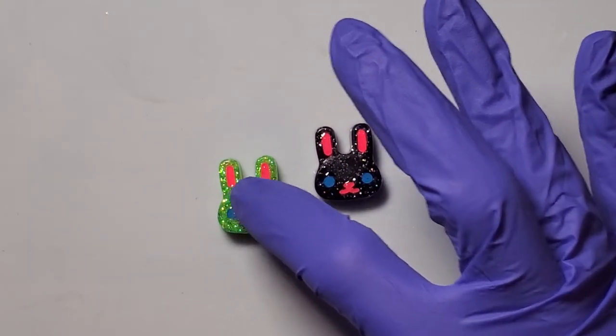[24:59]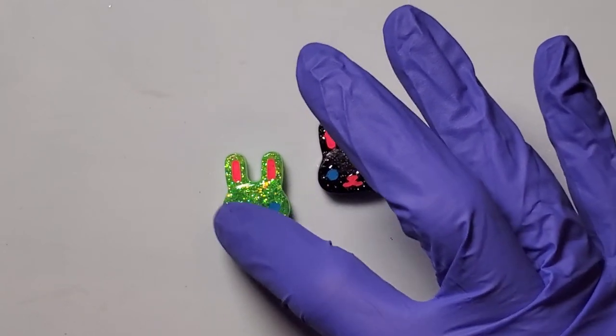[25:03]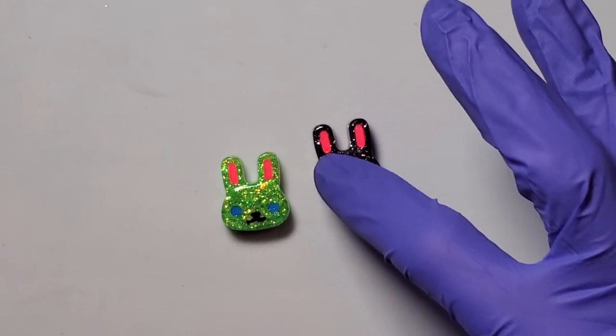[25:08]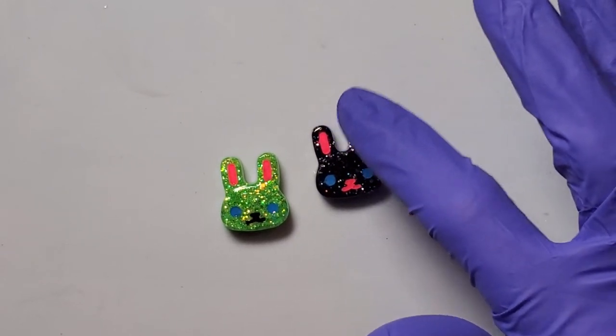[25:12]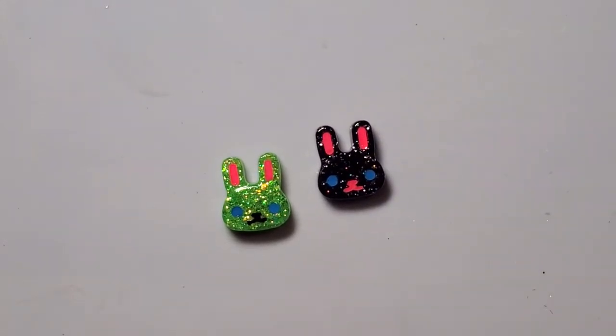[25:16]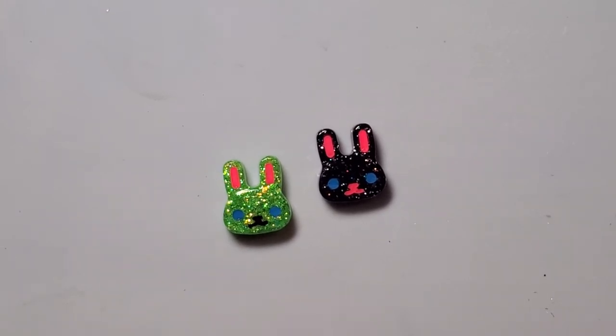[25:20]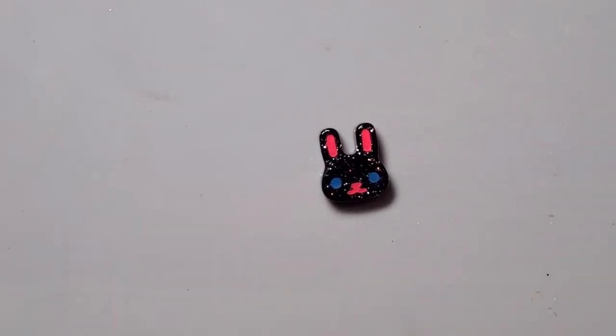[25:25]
Just drop it in. Yep. And then I will spread it around just a little bit since it's a little high. All right, so I will go and cure these now, and while that's curing, I will show y'all how I package them myself.
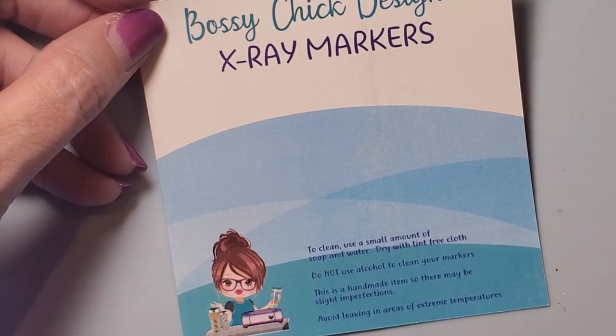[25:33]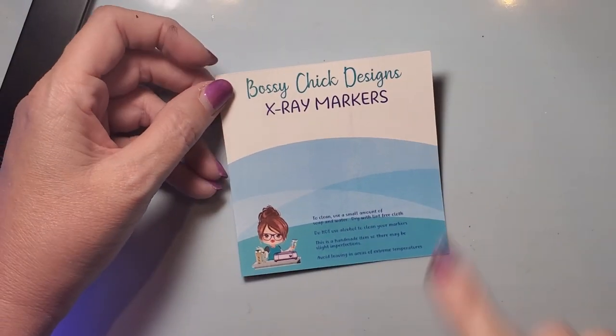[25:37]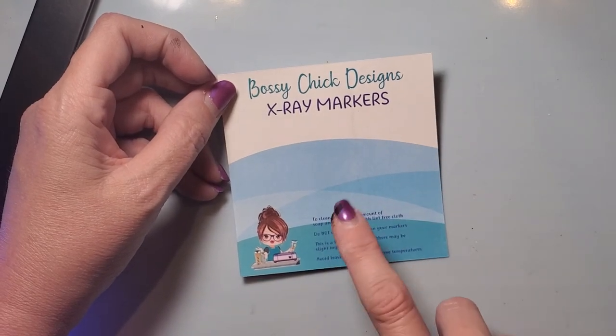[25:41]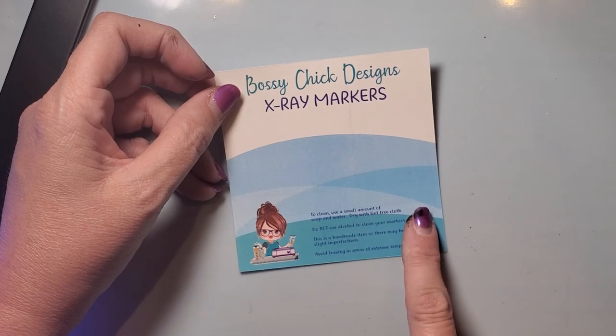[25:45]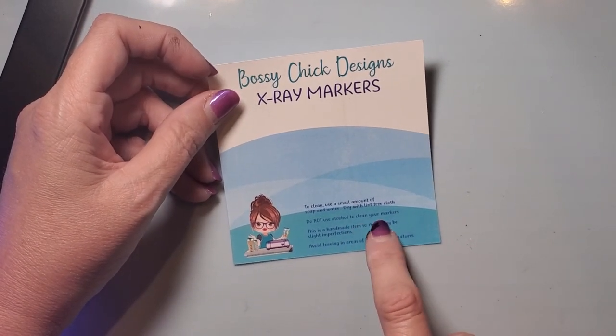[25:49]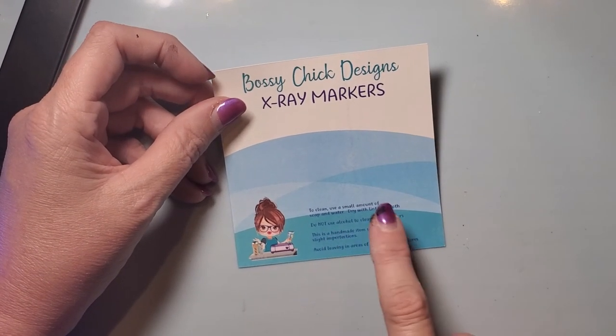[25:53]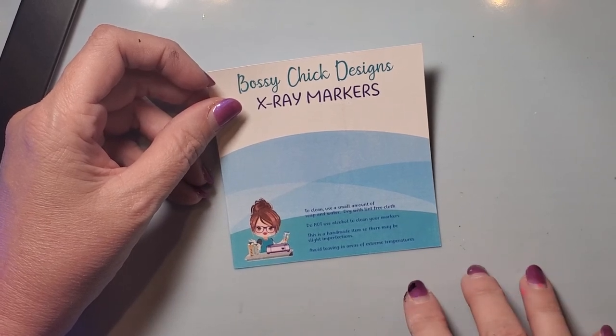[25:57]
I made my own little cards. Sorry, guys. So I have my little Bossy Chick designs. I have x-ray markers. I will explain how to clean them. Use a little soap and water, and a lint-free cloth. Do not use alcohol to clean your markers. I just leave that as standard, just because I don't know if I'll ever use resin or two-part resin, UV resin, whatever. So I just leave it.
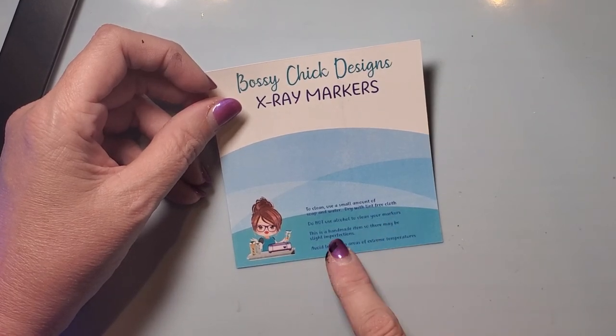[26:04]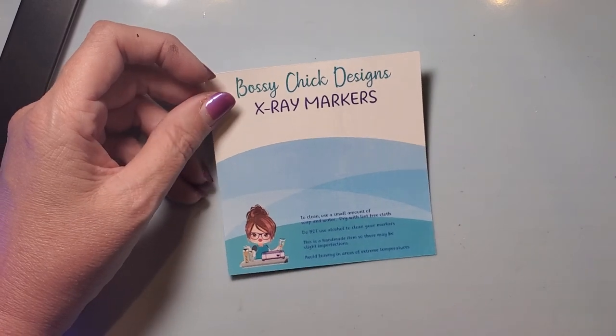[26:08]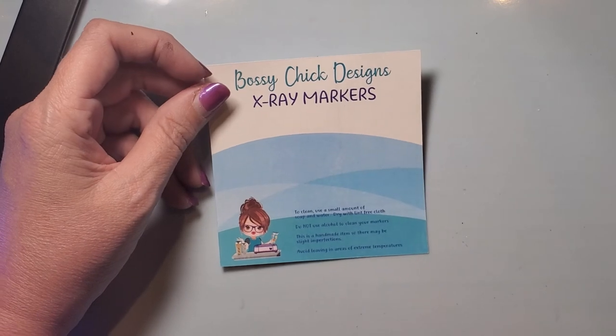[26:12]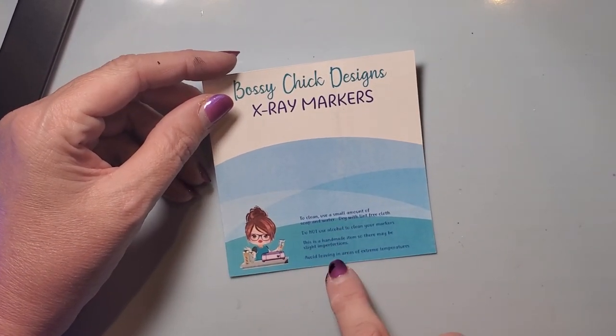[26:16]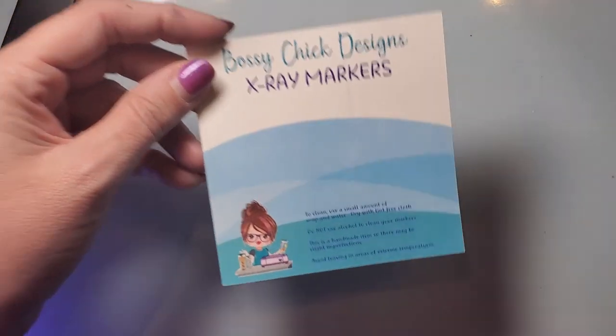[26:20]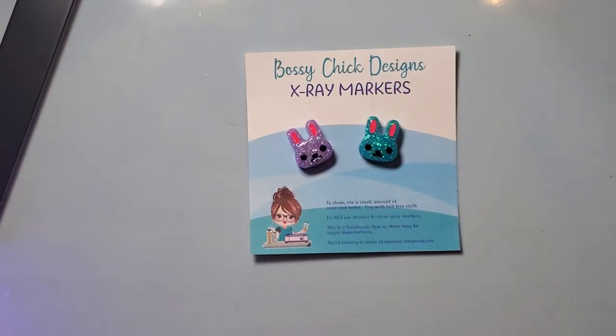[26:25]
And then I do throw in a little clause that it is a handmade item, that there are going to be slight imperfections just because we are human. Likelihood is if somebody sees a little imperfection, it is what it is. We do our best as crafters to create the best quality product that we can, but we are human. And then I'll put a little comment about avoiding leaving them in extreme temperatures, just a basic standard little disclaimer. And then I actually double side tape them.
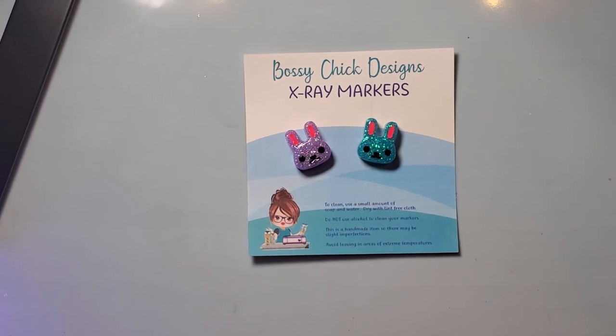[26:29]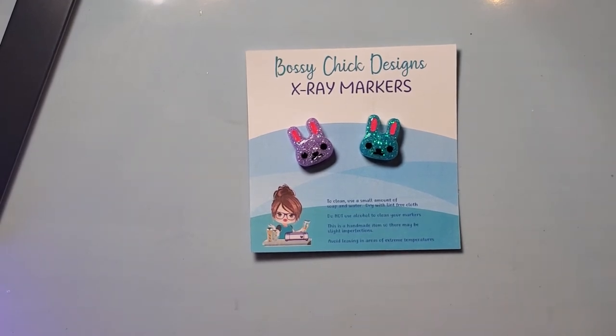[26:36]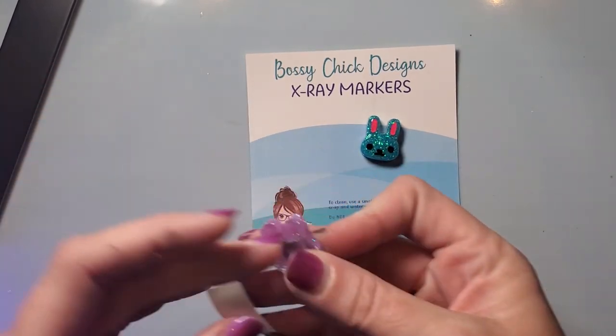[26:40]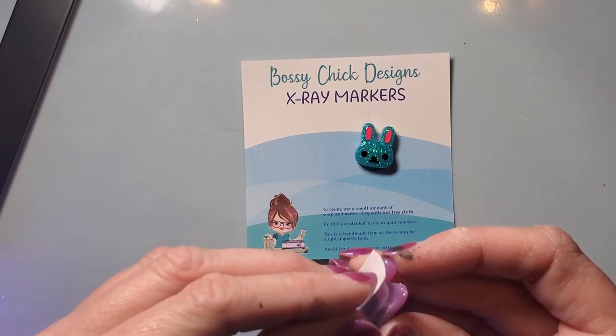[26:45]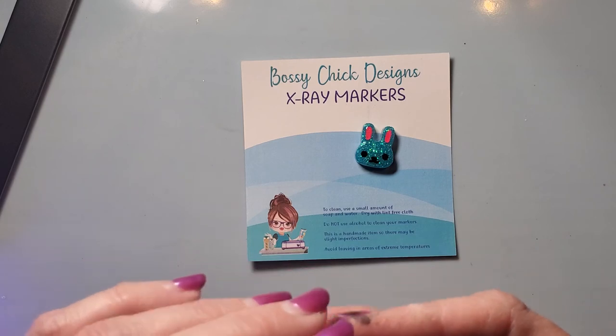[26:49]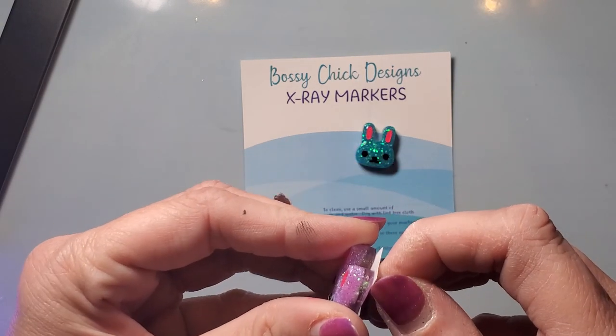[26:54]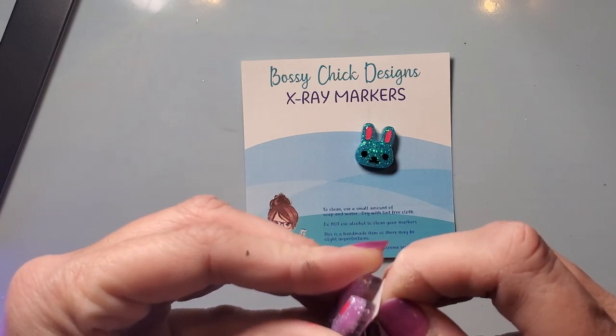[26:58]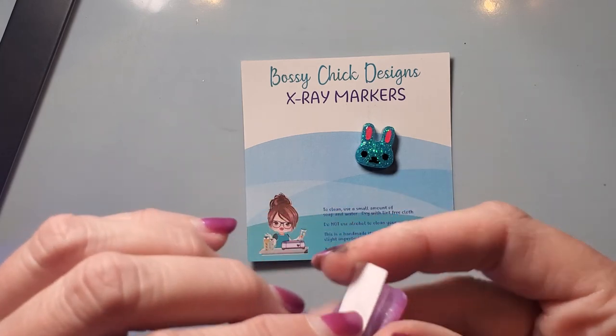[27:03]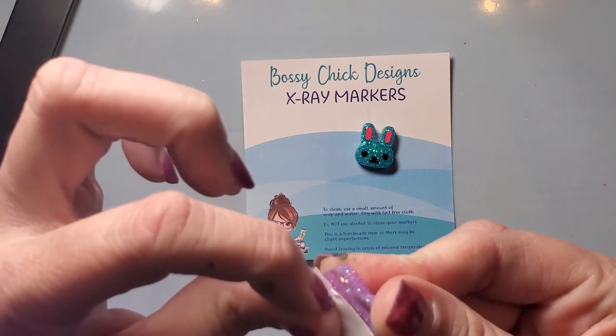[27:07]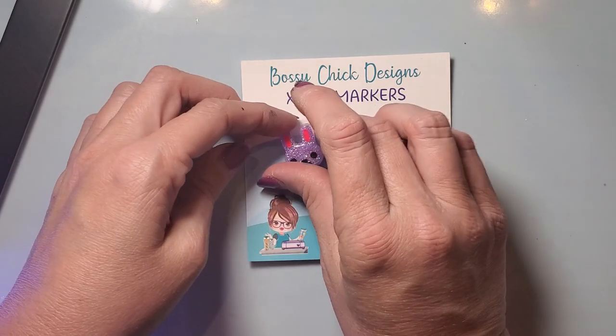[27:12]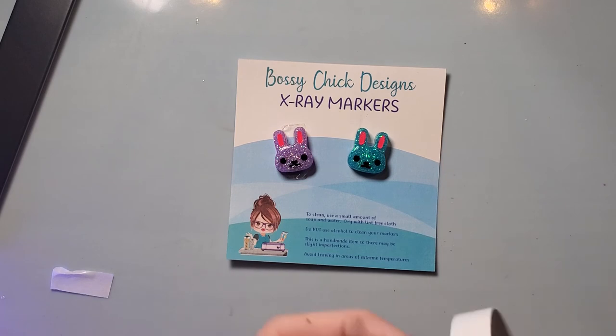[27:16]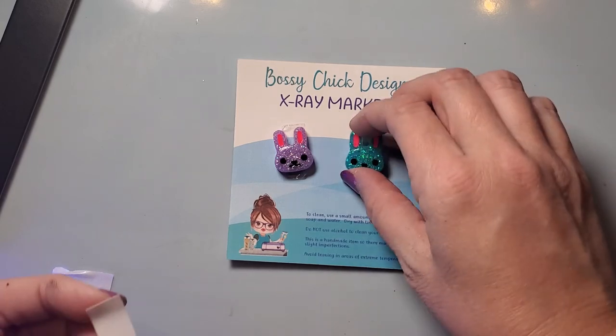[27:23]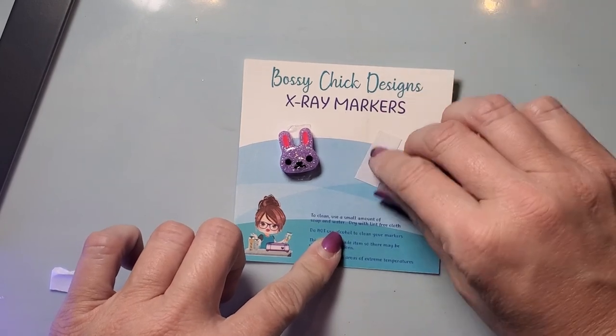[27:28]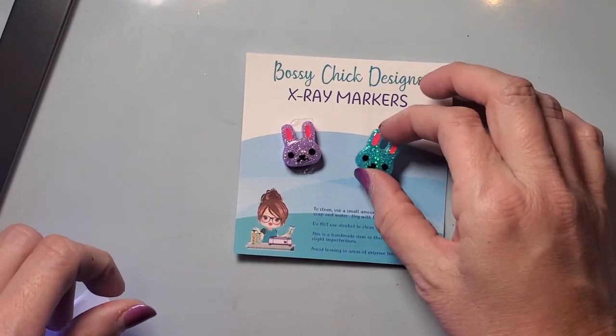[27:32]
Let's see. Yeah, I got some double side tape. Let's see if I can find scissors. So I would just put some double side tape on the back of them. You can place it ultimately however you want. Sorry guys, I am so not used to having nails. I have these little short stubby nails normally, so I can usually peel anything off, but now my nails are so thick since I started getting them done.
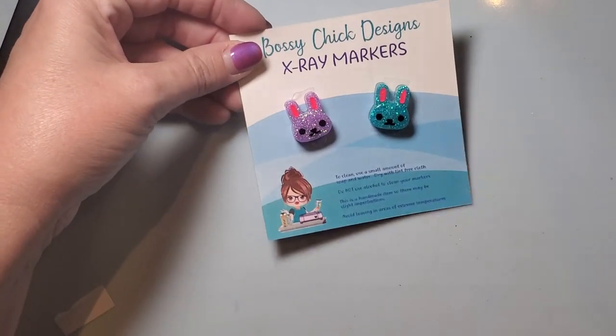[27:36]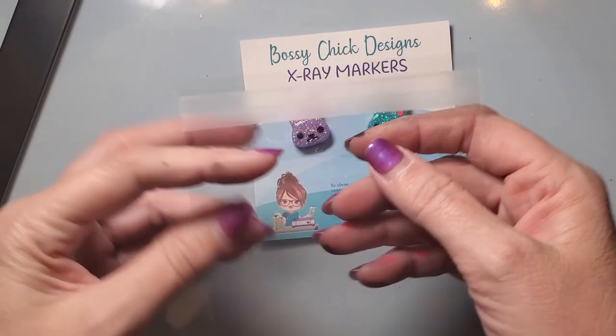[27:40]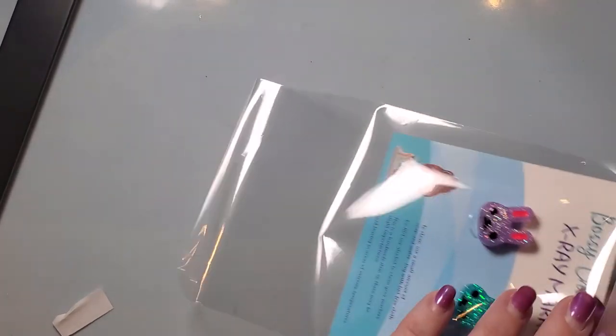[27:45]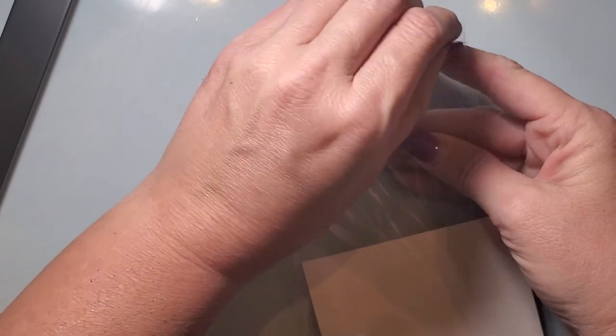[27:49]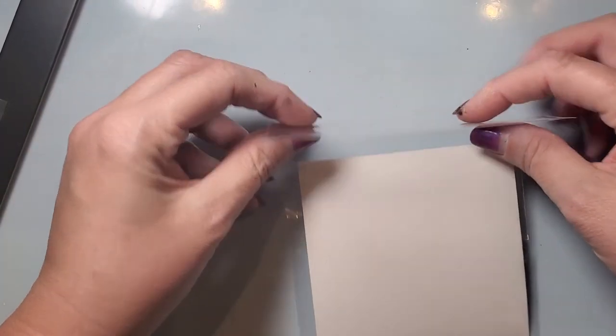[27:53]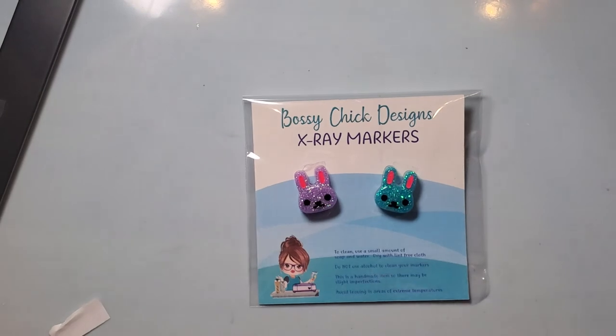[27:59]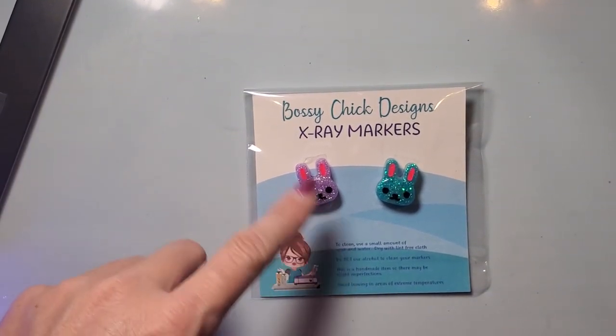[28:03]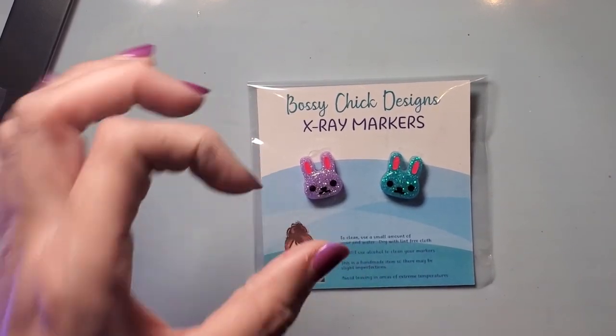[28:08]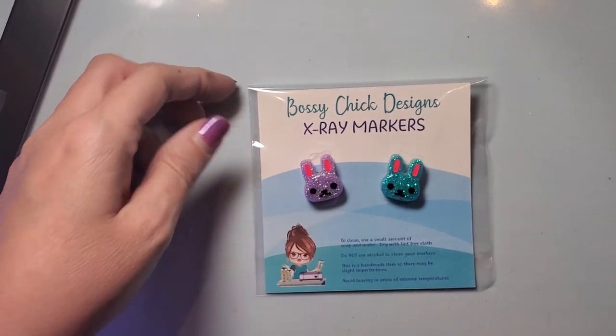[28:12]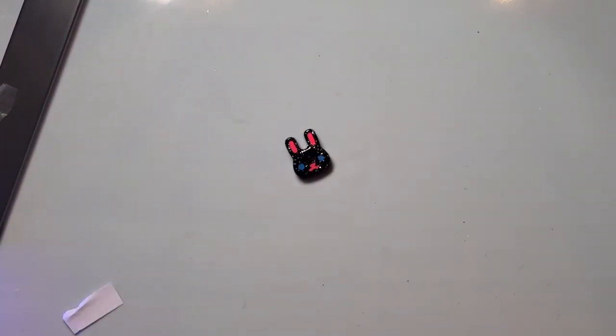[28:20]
And then I have these little 4x6 bags that I slip them into. Then I will fold it over and seal it. And that's how I do mine. I haven't had any problems with it. They're super cute. And it fits my regular acrylics, my 2-inch acrylic cutouts that I use, and my 1.5-inch also. So it works for me. So that is that. And then these are the other little bunnies.